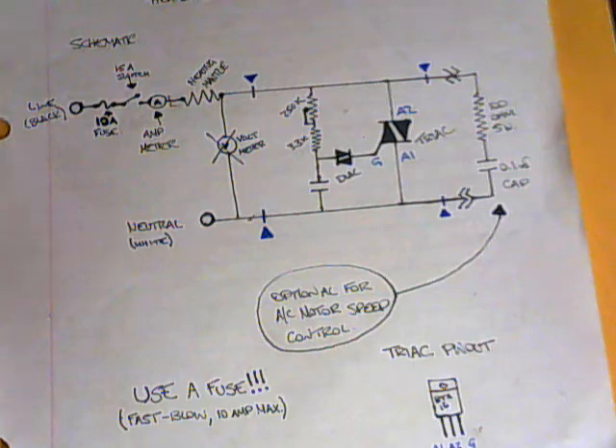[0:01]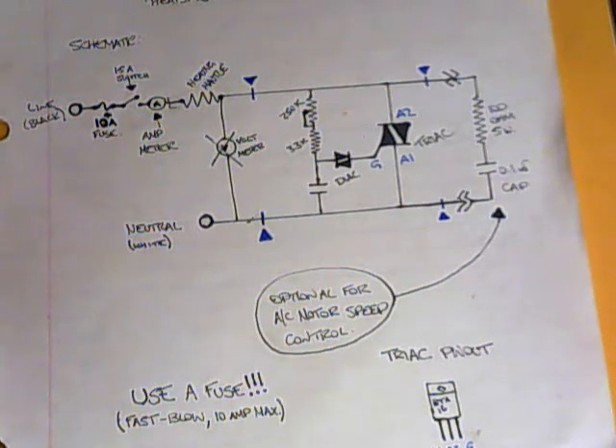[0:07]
Hello YouTube, this is just going to be an in-depth DIY on how to build your own heating mantle control. It's going to be a step-by-step. Hopefully you can follow along and build yours with me as we go.
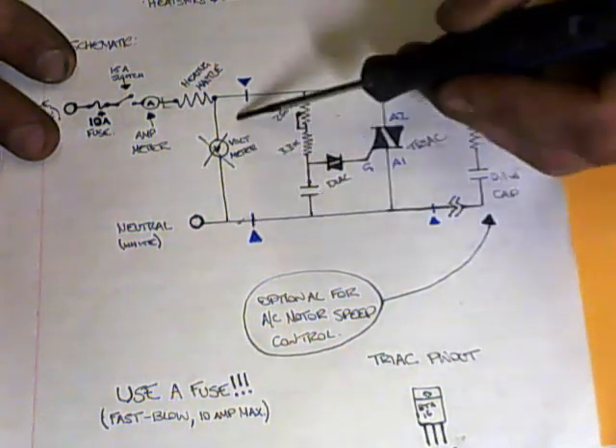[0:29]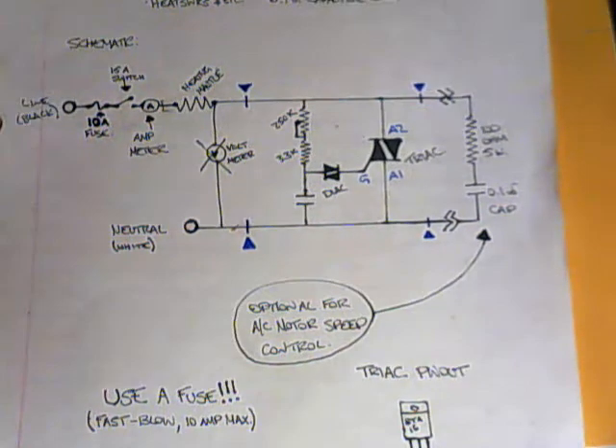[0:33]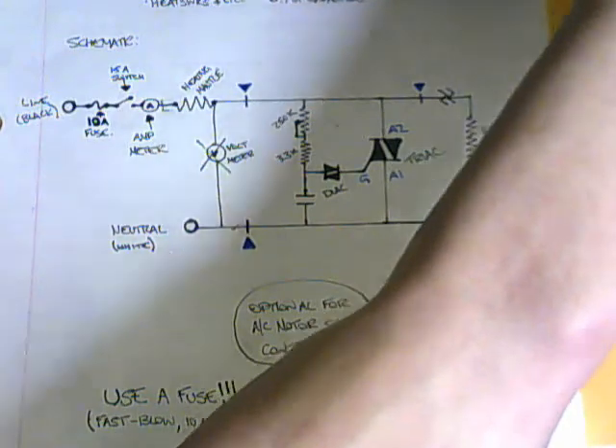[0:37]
First I'm going to go over the schematic here a little bit because I'm not building the whole thing. I'm just building the important part of the circuit, the hardest part for you to do, and I'm going to show you how to do it step-by-step. So we will only be building in between the blue triangles here. It's not going to take too long. Like I said, you only need 5 parts.
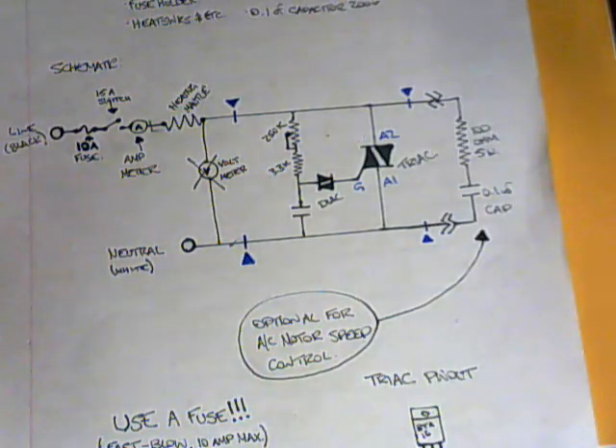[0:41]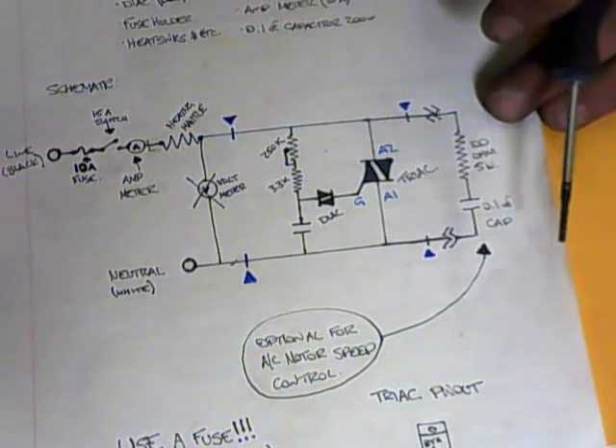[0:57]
So what I would recommend you do right now is pause this video and draw this schematic, something similar to it at least, so that you can follow along and highlight as you go, so that you can remember what you've done, like I've said before.
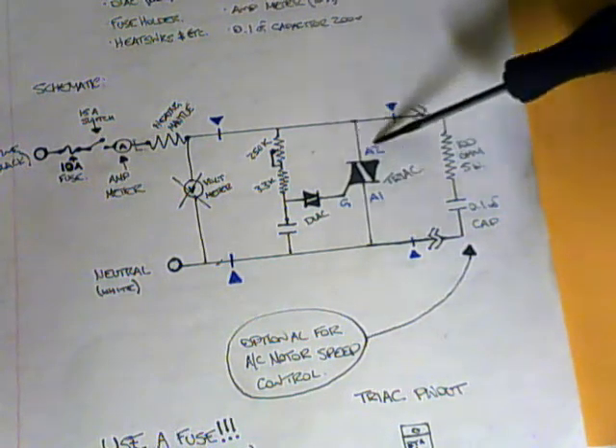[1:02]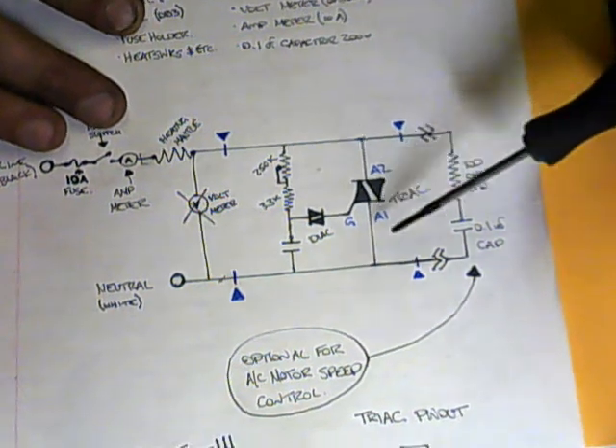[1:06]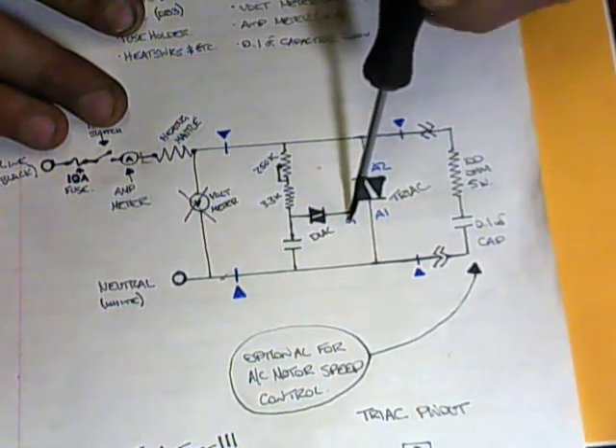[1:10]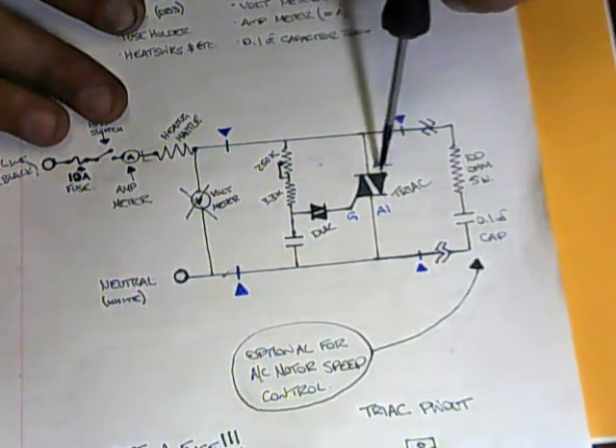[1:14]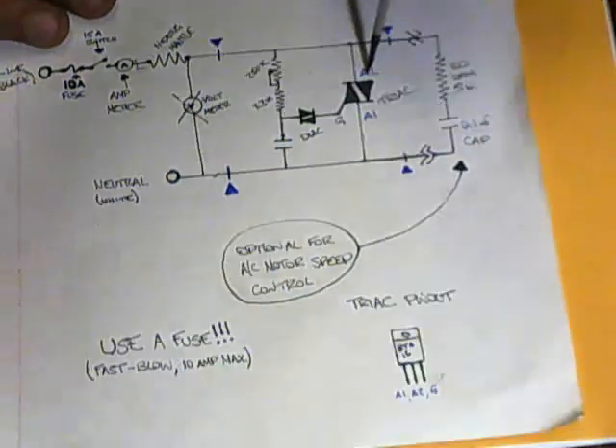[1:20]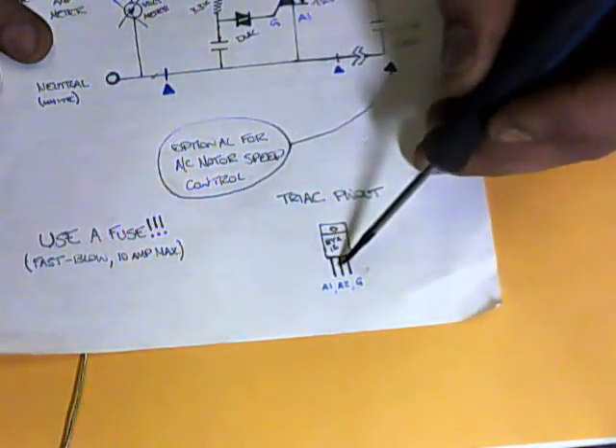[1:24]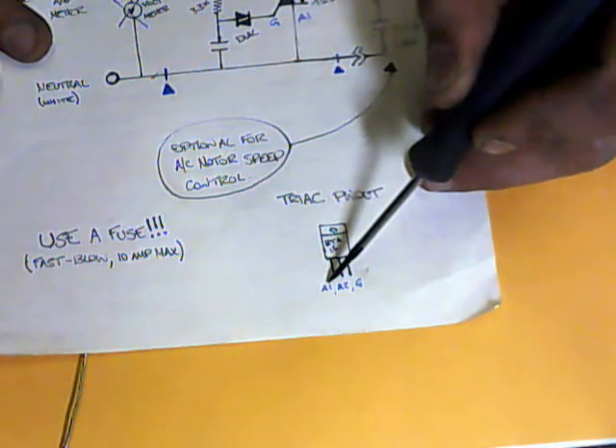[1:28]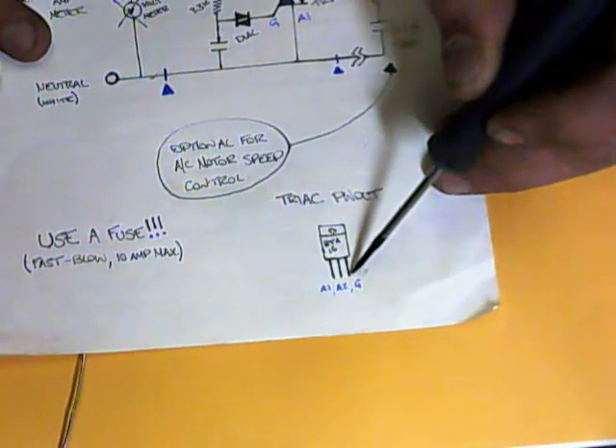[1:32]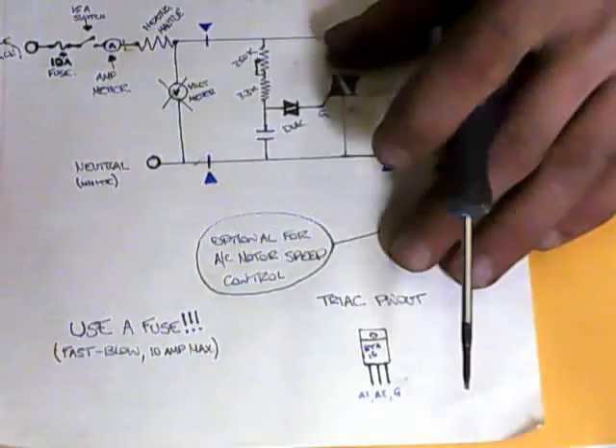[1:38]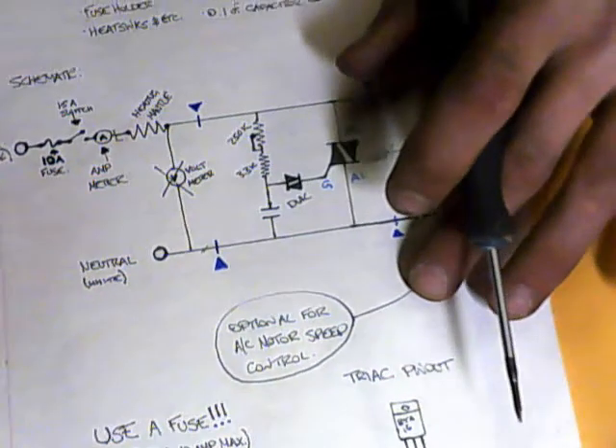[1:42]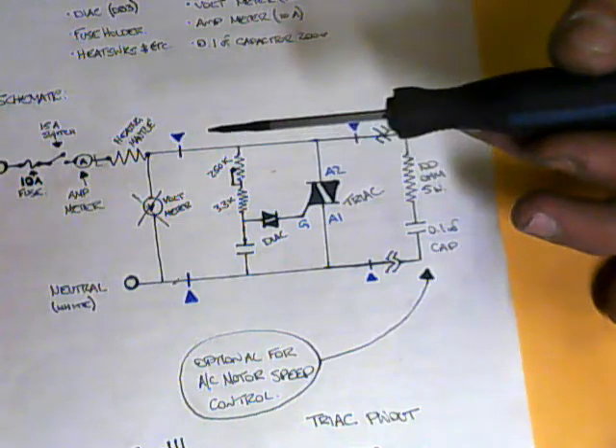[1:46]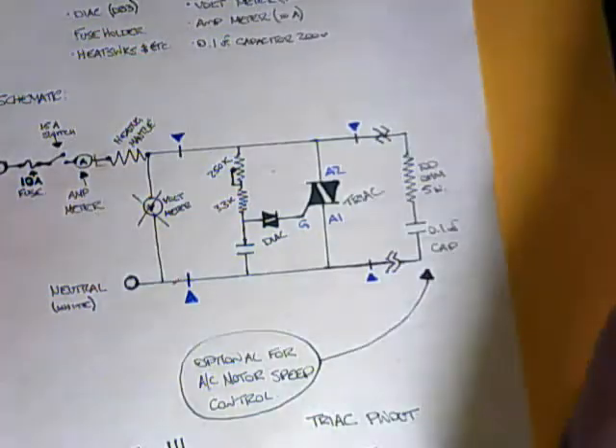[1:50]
Also, one thing to keep note of is the triac here. It is important which way you connect it. So just remember that this one is the gate. This one is A1. And this one is A2. Write that down. The pinout is right here. Pin 1, 2, and 3. Pin 1 is A1. Pin 2 is A2, and pin 3 is G. This is important. You have to get that right. You're going to be following along anyway, but just keep that in mind. Everything else, because it's alternating current, it doesn't matter which way you hook it up. The polarity doesn't matter. So that being said, let's get into some of the parts you're going to be needing.
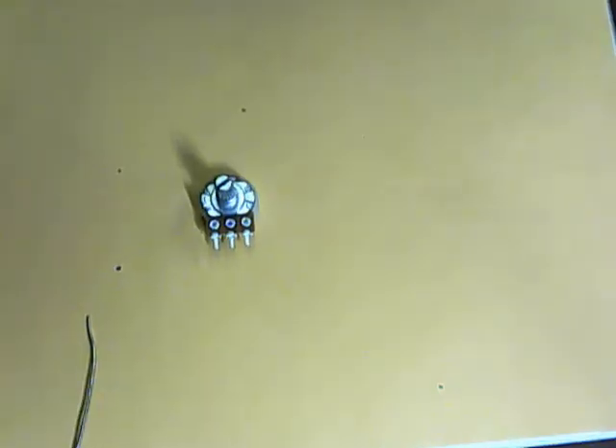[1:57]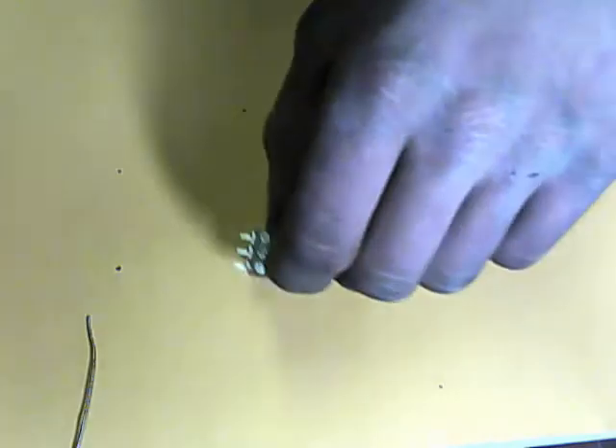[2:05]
First off, there's going to be a potentiometer. It's rated for 250 kilo-ohms. You can find those on eBay for about 75 cents each, or 2 for $1.50. I got 2 for $1.50. You're going to need a triac. Triacs are going for about $1 each. I got 5 of them for like $4.50.
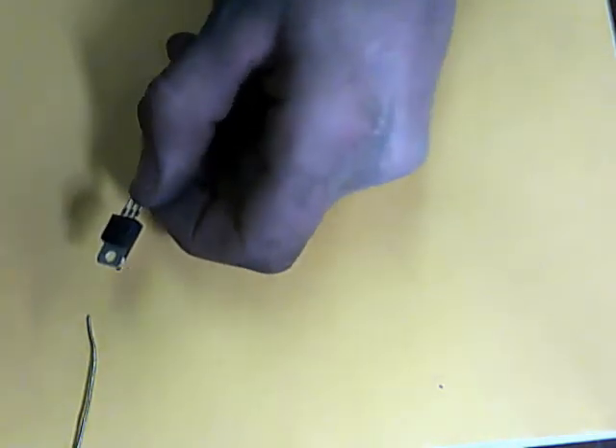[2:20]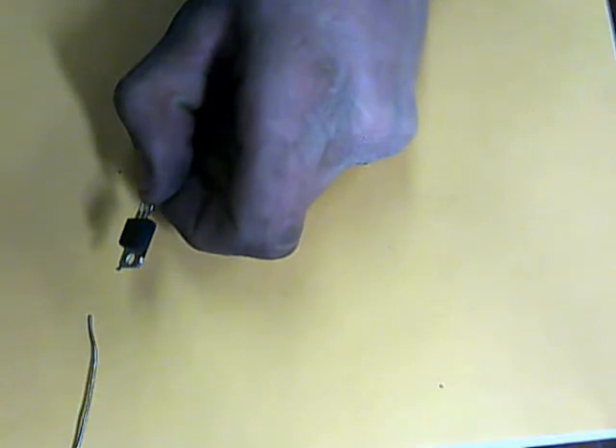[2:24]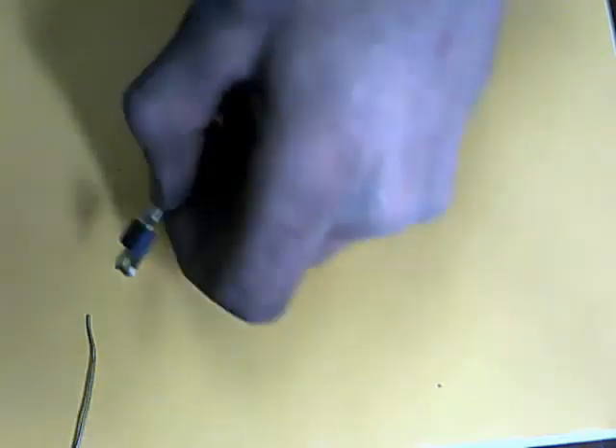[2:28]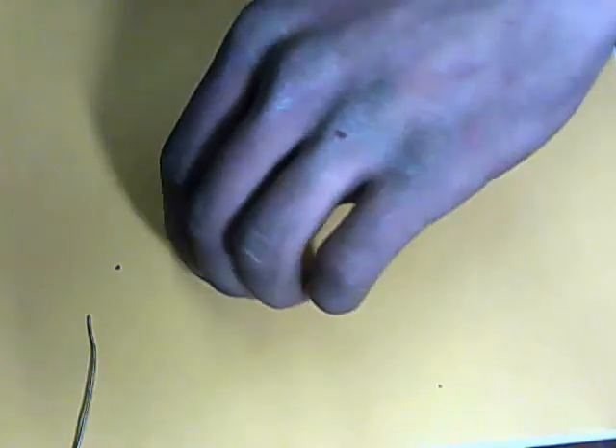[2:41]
This one's number is BTA16. It's a 16 amp rated triac. It's oversized because we're planning to be running a maximum of 10 amps, and that way we won't burn out the triac. Hopefully.
You're going to need a 0.1 microfarad film capacitor rated for 250 volts. It can be ceramic, it can be film, it can be any type of capacitor, as long as it is 0.1 microfarads and it is not electrolytic. Not one of the little black round ones like these here. You don't want those.
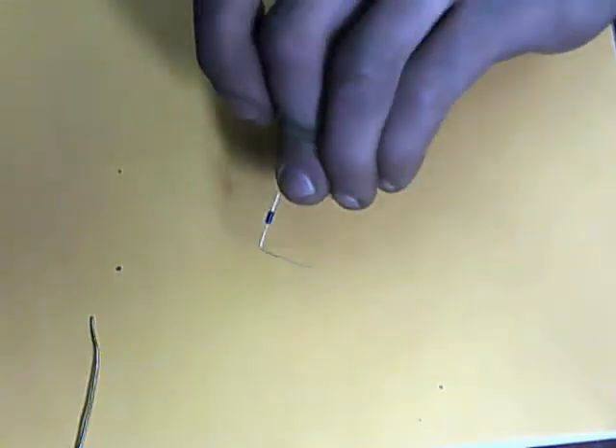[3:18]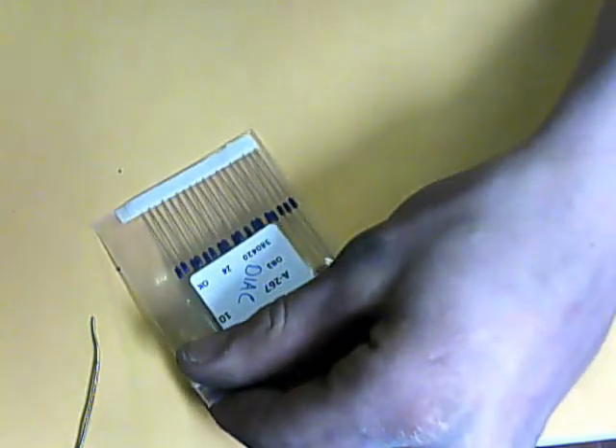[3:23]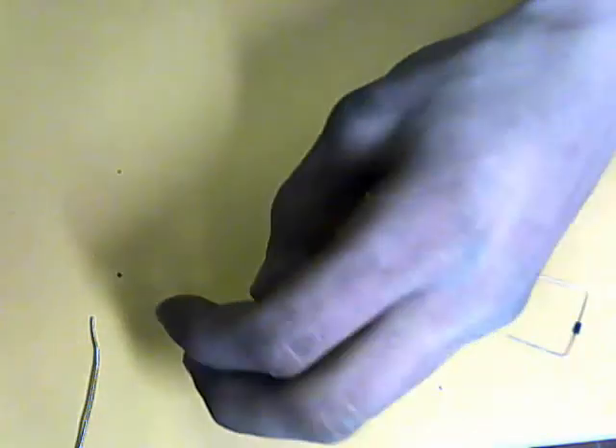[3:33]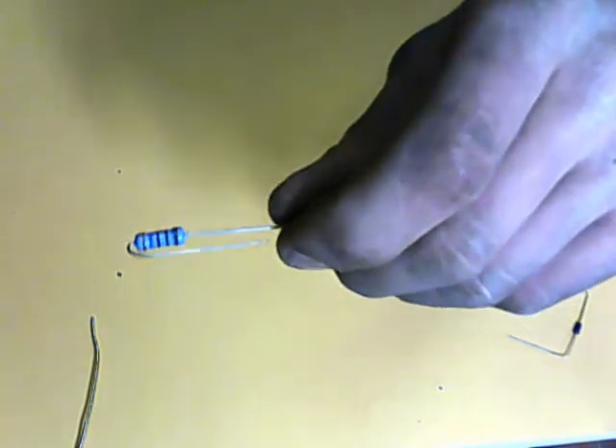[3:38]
The next part you're going to need is a Diac, which is this little guy here. Its part number is DB3. And it is a Diac, so you could look that up on eBay. I got 10 of them here for $1.50. And you're going to need a 3.3 kilo-ohm 1-watt resistor. You need to get about 10 of these for $2.50.
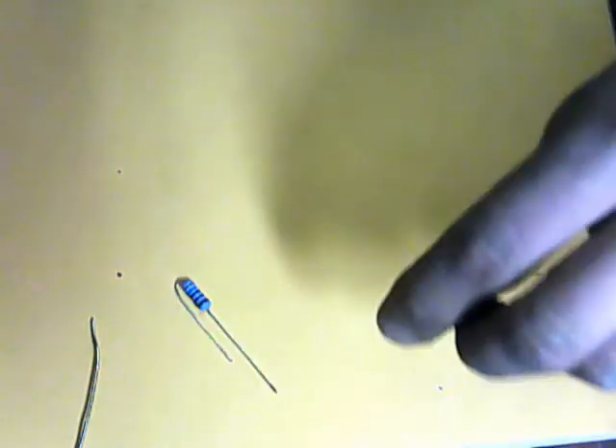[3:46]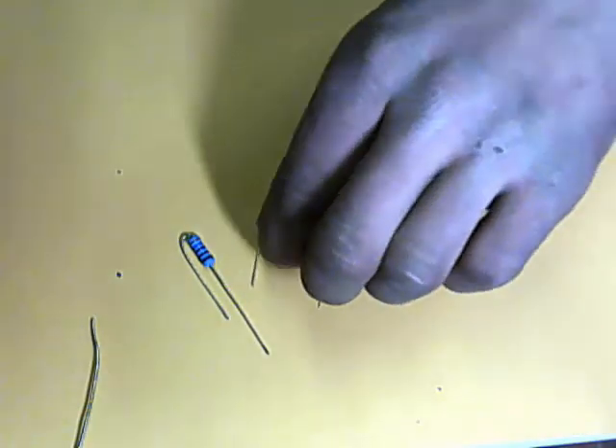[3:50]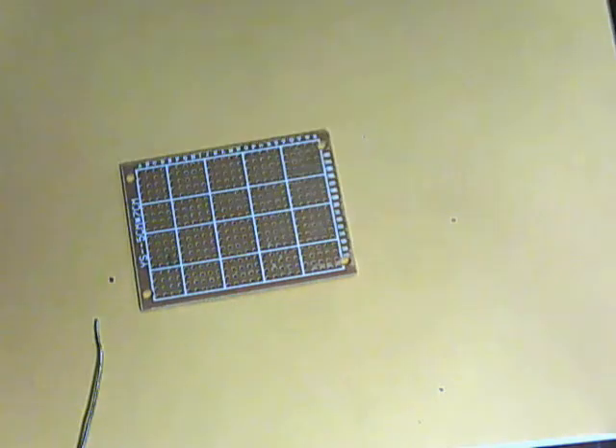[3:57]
Just take note of how I have my pieces bent up here. It doesn't really matter. It's just taking some space. It's going to help us out along our way. Another optional piece, you can solder it all together point to point if you're following along close enough, but a breadboard really helps, and I'm going to be putting it together on a breadboard right now to show you how it's done. These are going for about $1 each on eBay.
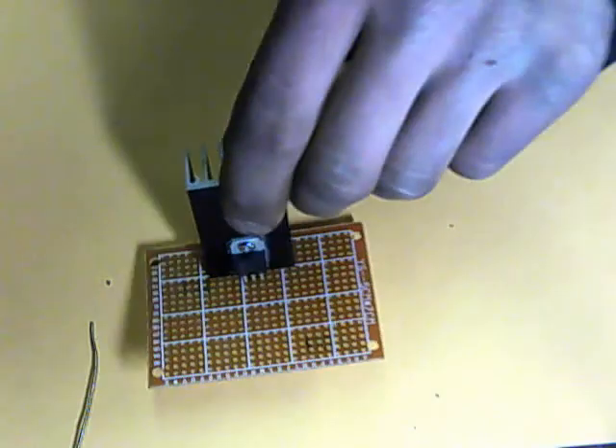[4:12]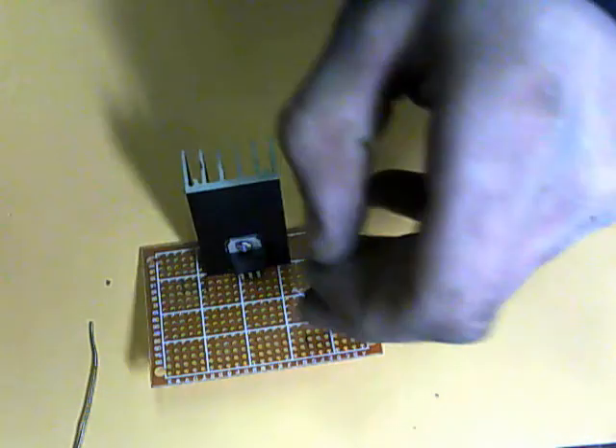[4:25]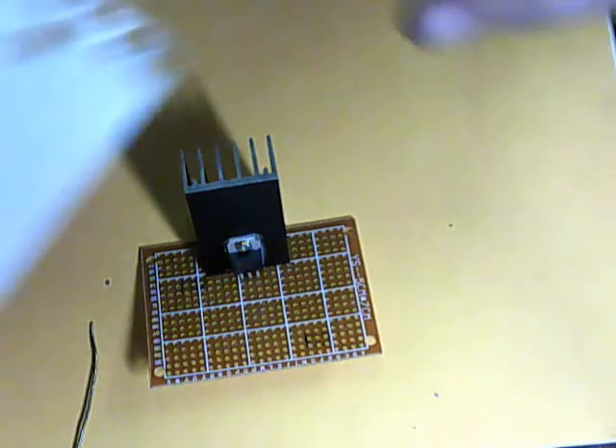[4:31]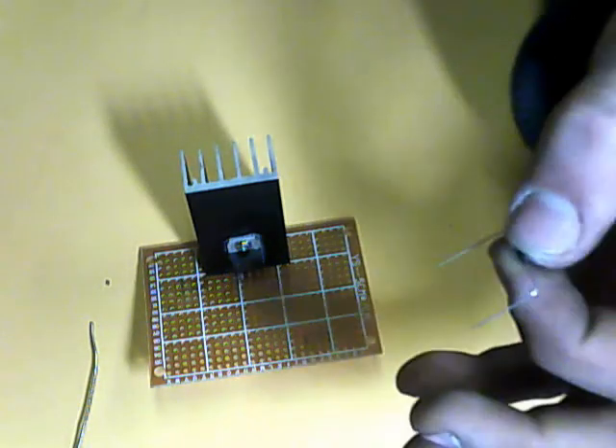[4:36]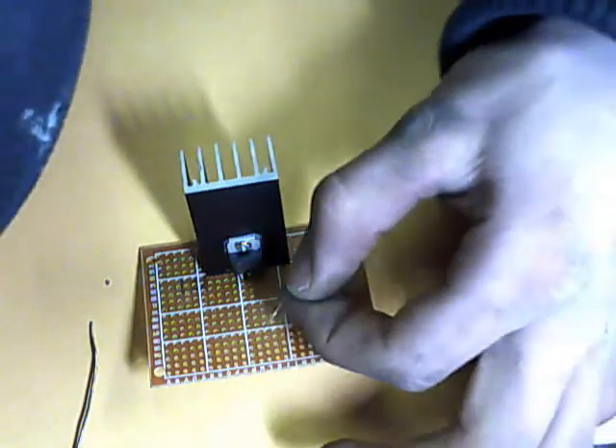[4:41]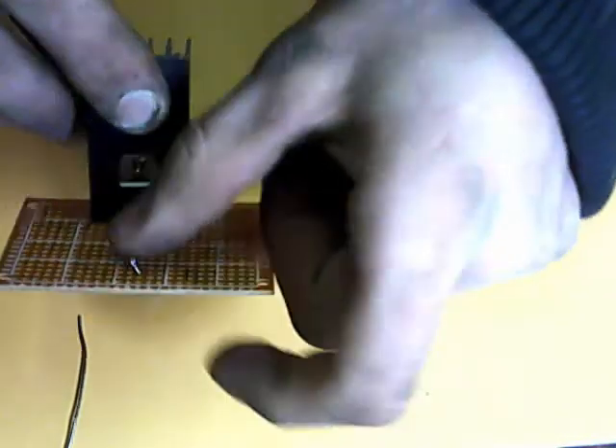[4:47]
So to start here, what I've done is I have mounted a triac to a heatsink, and I've gone ahead and soldered it to the breadboard somewhere in the middle near the edge. And the first thing we're going to do is take the Diac, and it goes from the gate, if you note from the schematic that you drew up. Pull mine out here. So from the gate, which is pin 3, you can count over from the left, 1, 2, 3, and we're going to put the Diac in front of it, and drop it down in there like that.
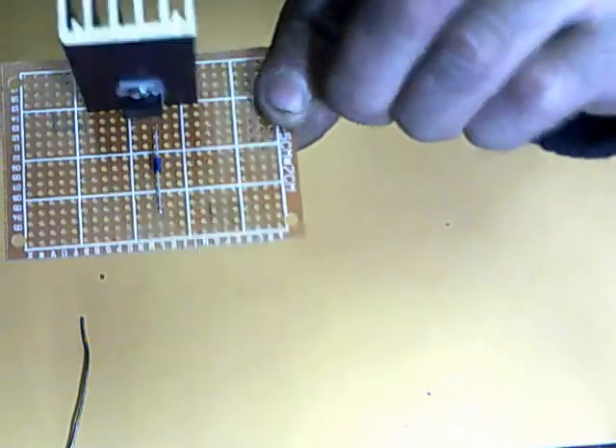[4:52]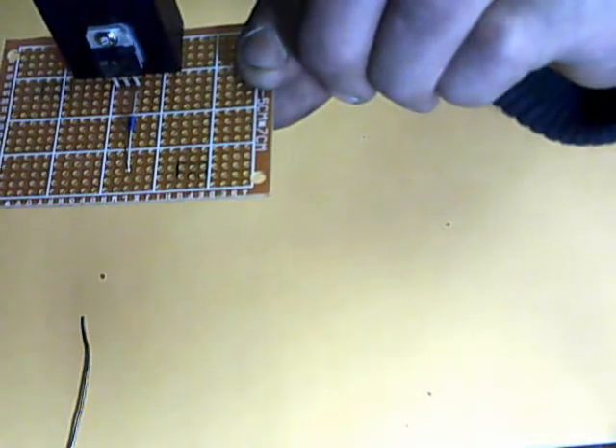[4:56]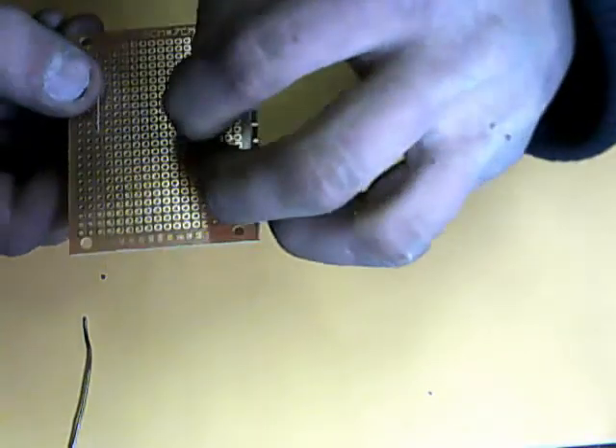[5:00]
I don't know if you can see that very well, but it's right in front of pin 3, and it extends out almost to the end. Not quite. So flip that over here, solder that in quick.
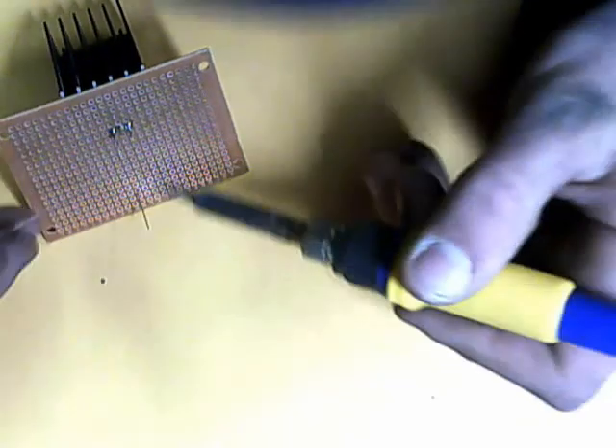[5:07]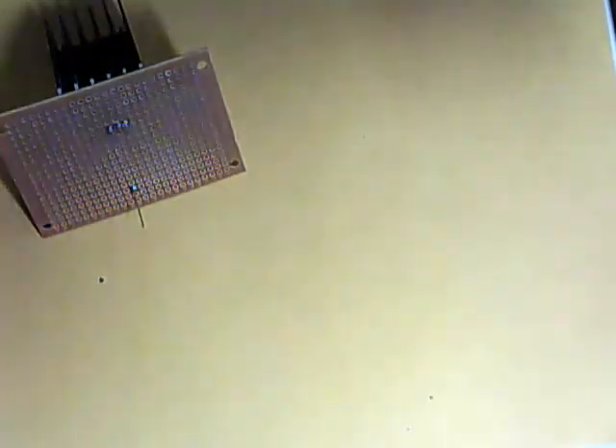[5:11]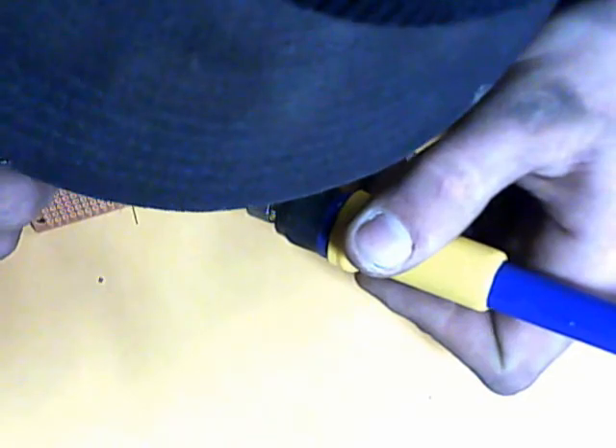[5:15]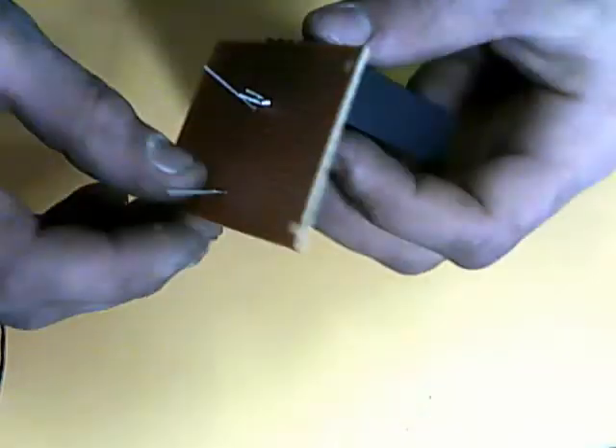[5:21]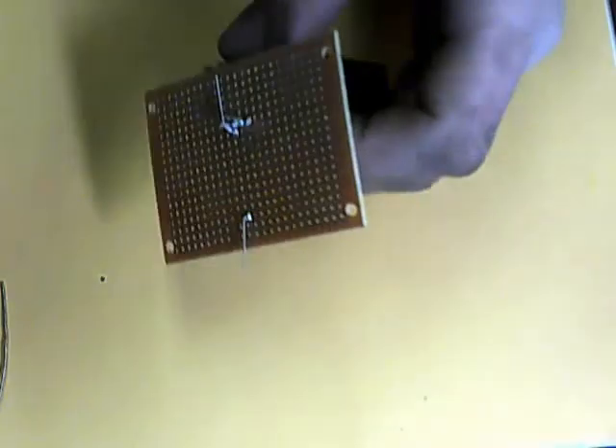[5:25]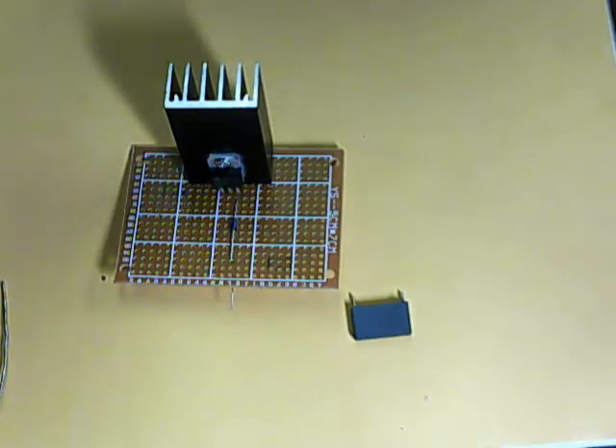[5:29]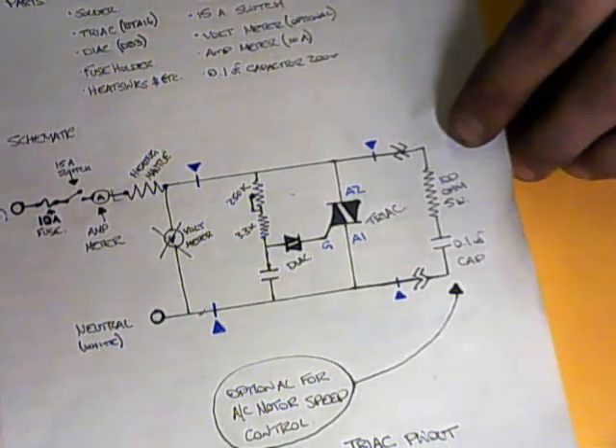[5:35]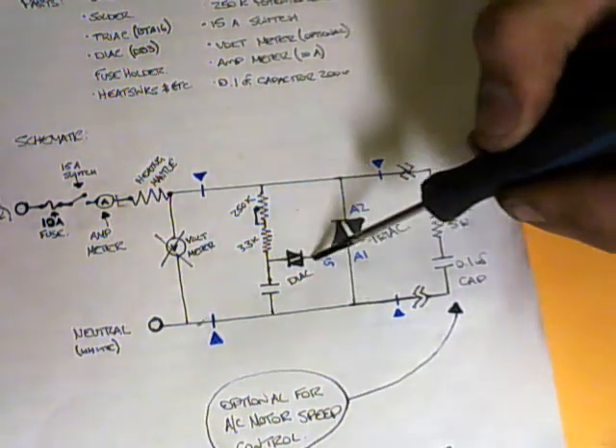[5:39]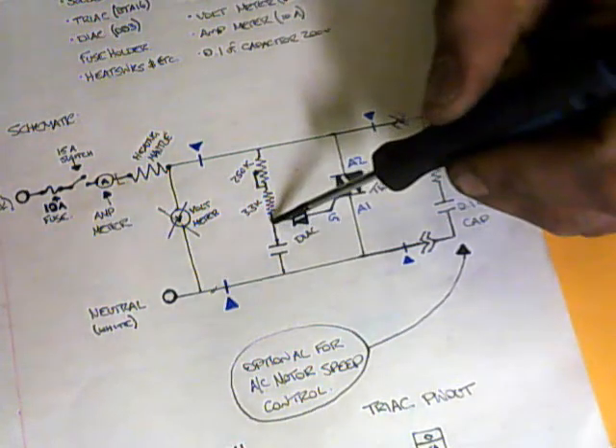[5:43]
So now that we got the Triac put in, I'm just going to fold these wires out of the way for now. We'll cut them all off at the end. So the next to the Triac, if you notice here, put this down out of the way. So off of the Triac that we just soldered in onto the gate of the Triac, it goes through the
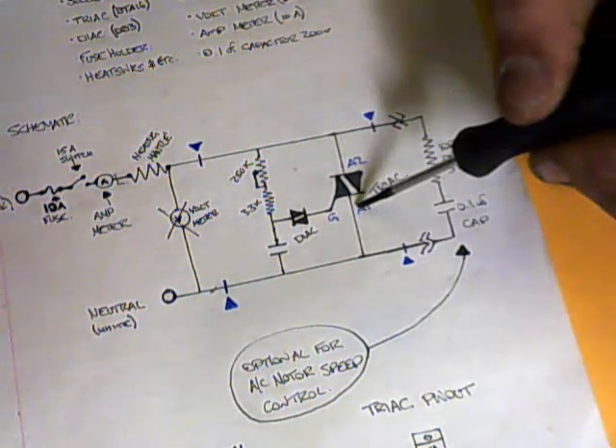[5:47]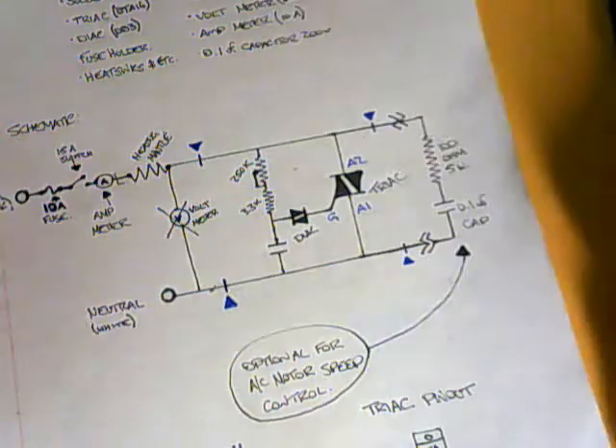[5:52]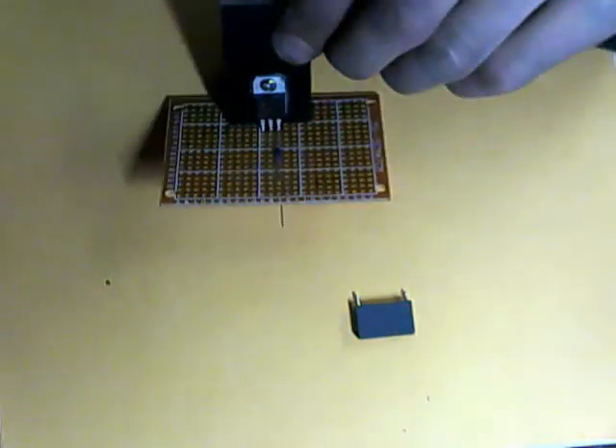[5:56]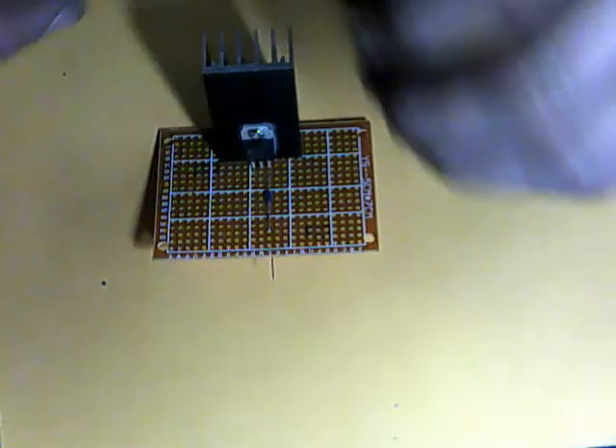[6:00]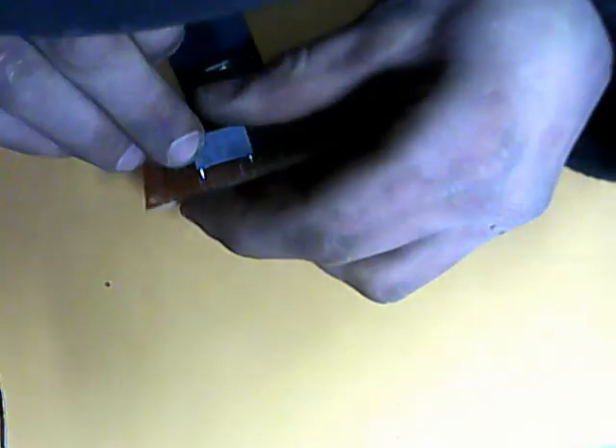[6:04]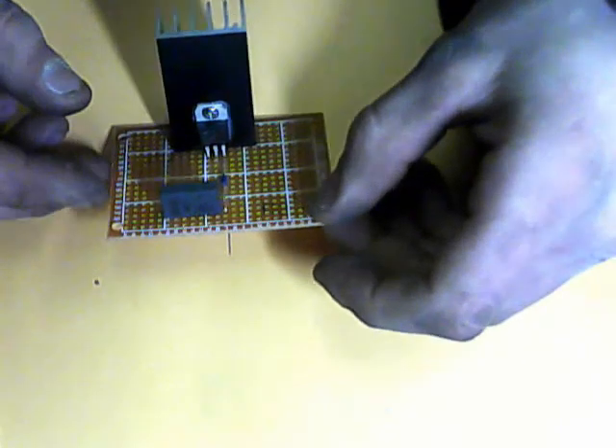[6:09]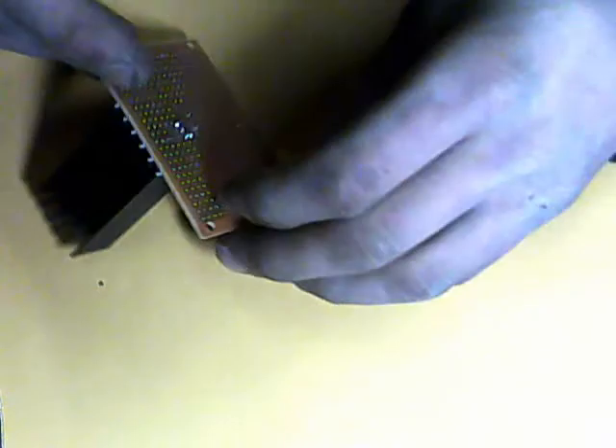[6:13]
capacitor to the neutral side. And we're also going to note that A1 goes to neutral. So what we're going to do here is A1 is pin 1 on the Triac, which is on the left-hand side of the circuit. So what we're going to do is we're going to take our capacitor, and from the Triac, we're going to go to the left, just to make things simple, and we're going to pop it in right at the end of the Triac there, like that. I'm going to go ahead and solder that in too.
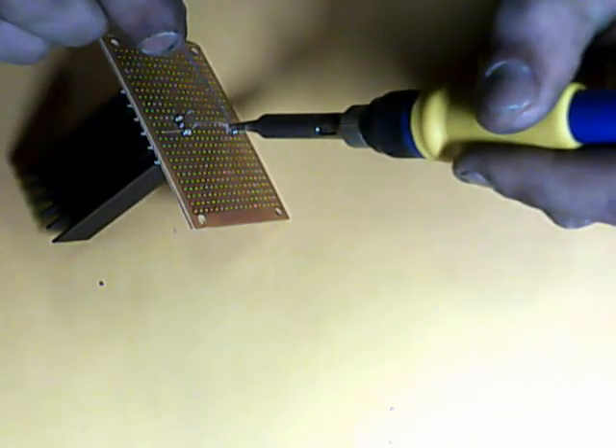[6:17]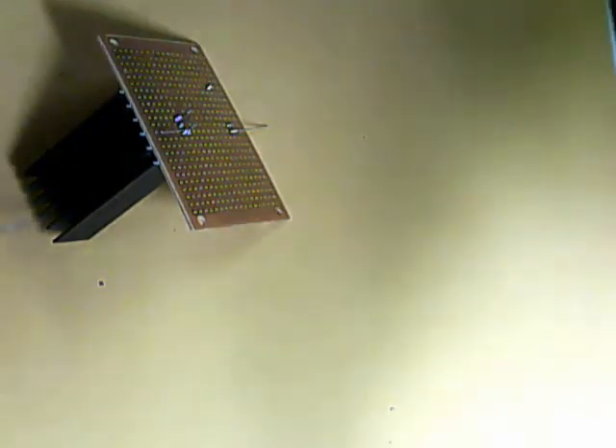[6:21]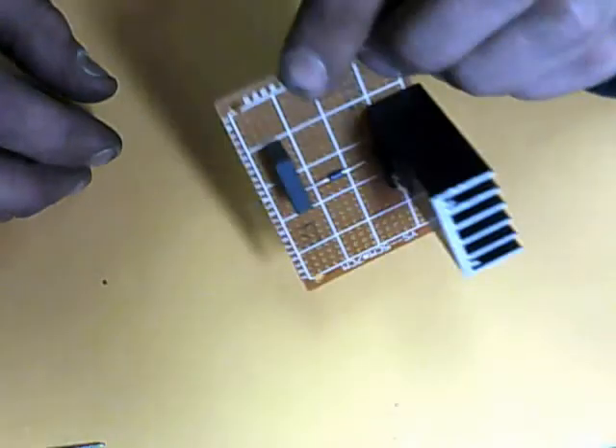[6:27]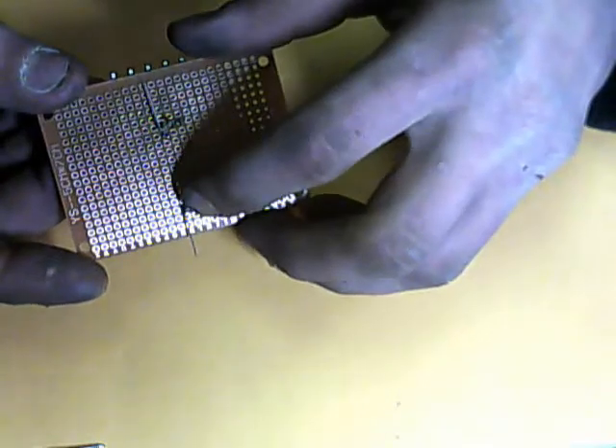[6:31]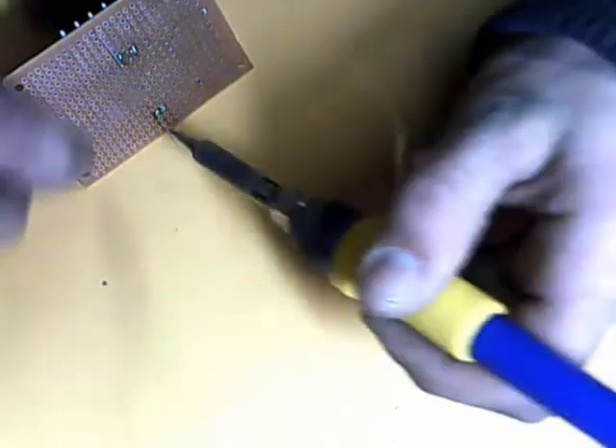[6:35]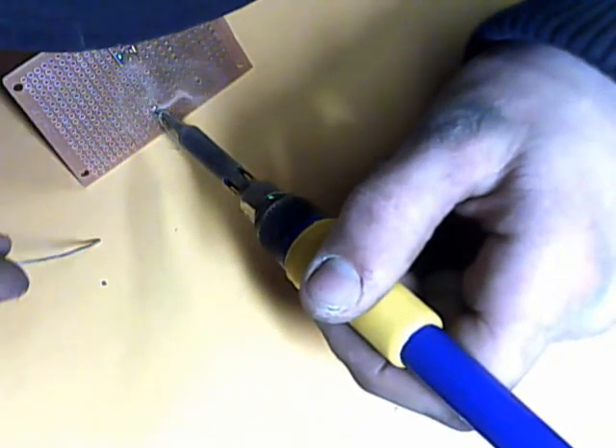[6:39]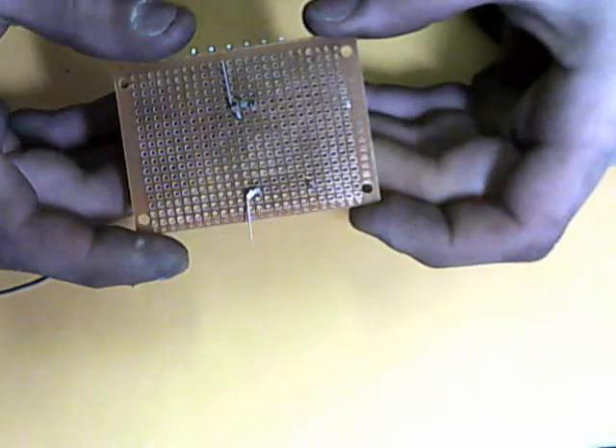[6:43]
So now that you have the capacitor soldered in beside the Triac there, what you're going to want to do is connect the one side of the capacitor to the end of the Triac there. Do that with a little bit of solder. What we did there, I don't know if the camera will see it, but we just bridged the gap between the two there. So now we're going to flip the circuit back over.
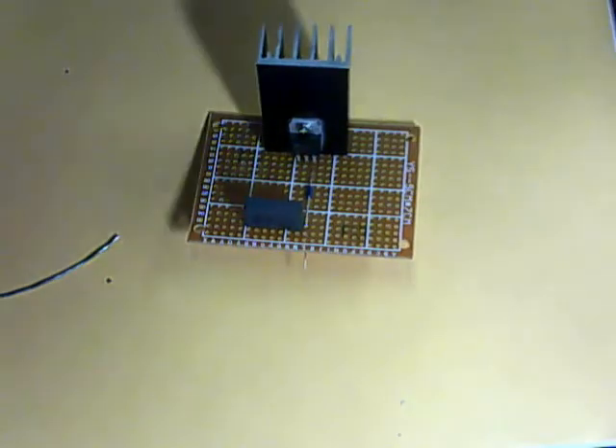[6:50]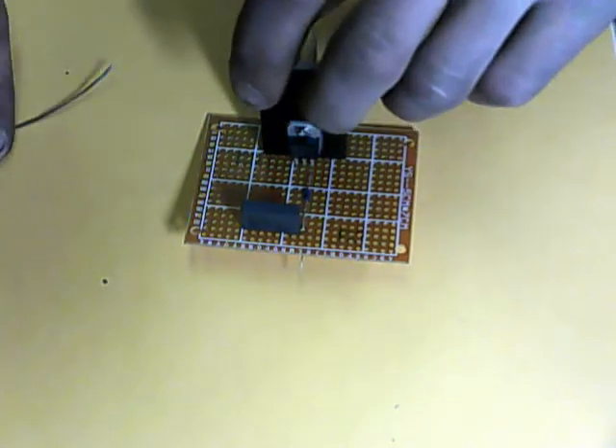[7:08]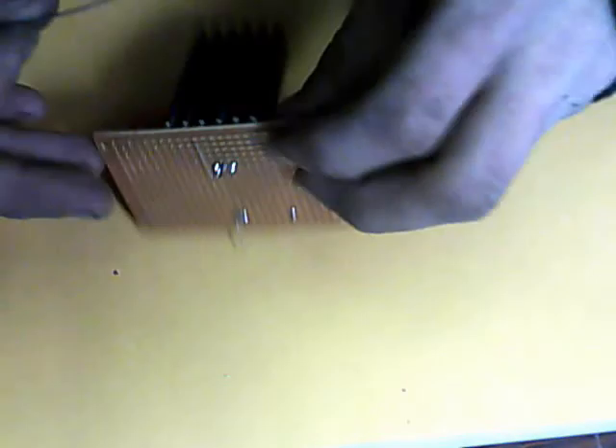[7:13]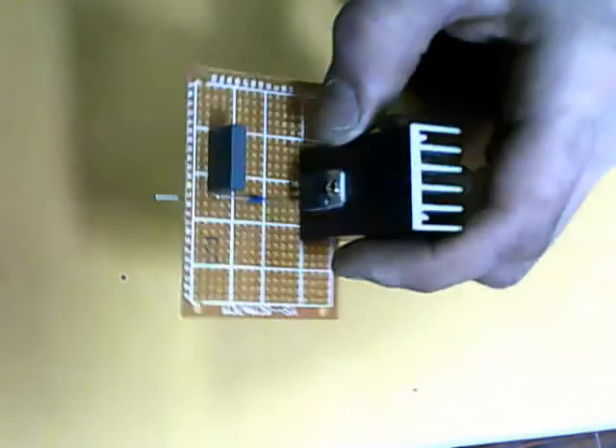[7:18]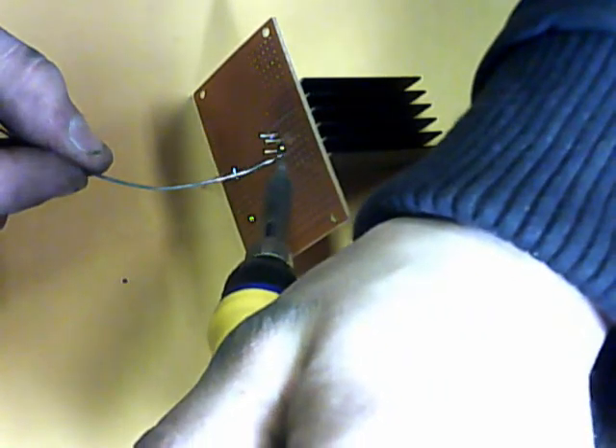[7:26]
So now that we've put the Triac in and the capacitor that is going to the neutral side of the circuit, what we're going to do is take pin A1, which is the farthest pin to the left, and we're going to basically run that over to a neutral rail, which I'm going to do now. So make sure you remember when you flip it over, everything's reversed, right? So pin 1 is going to be the farthest one on this side. We're just going to connect to it with some solder.
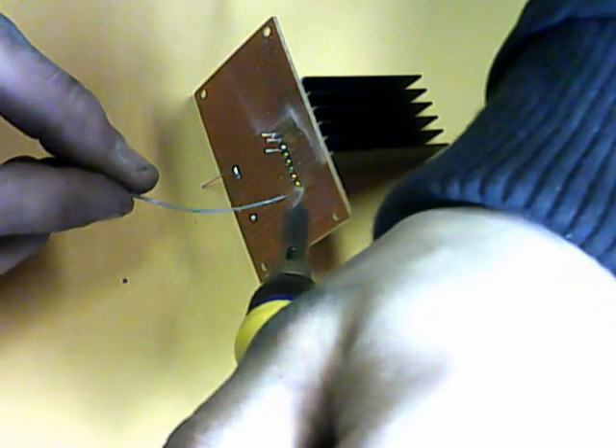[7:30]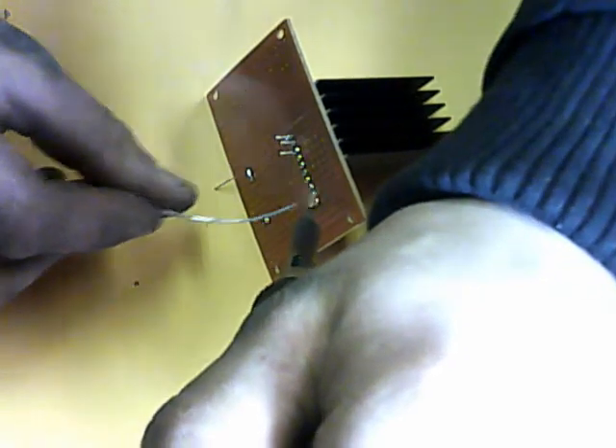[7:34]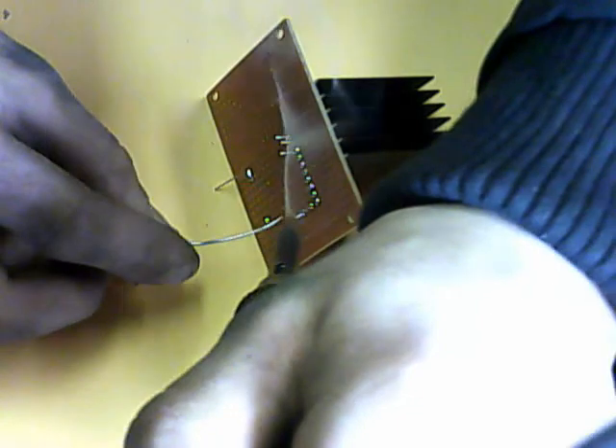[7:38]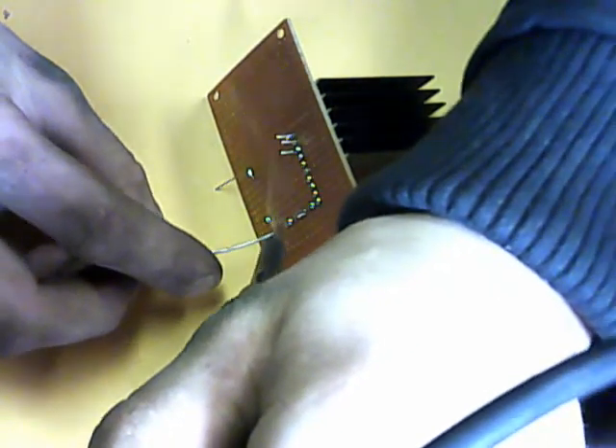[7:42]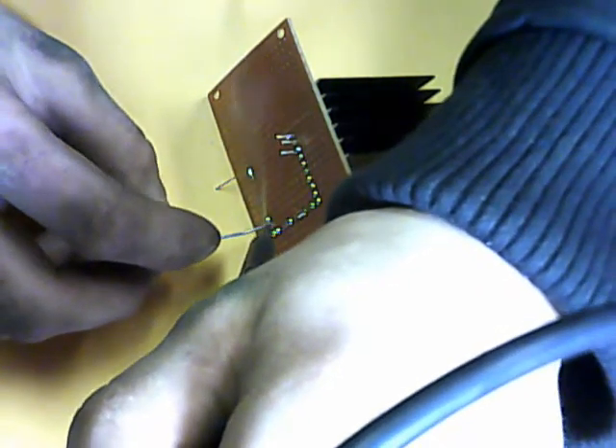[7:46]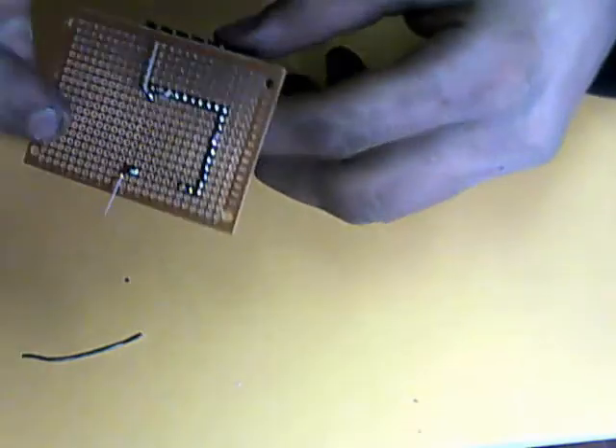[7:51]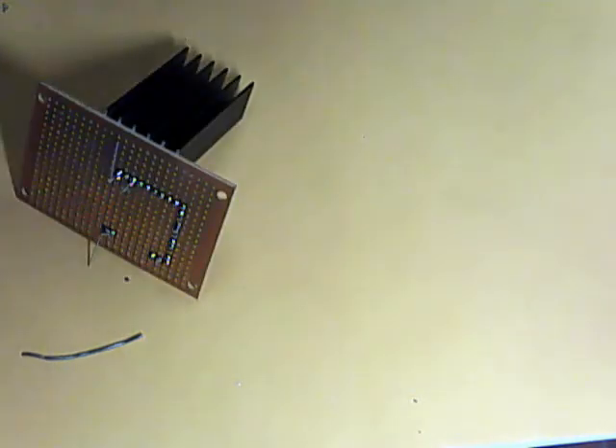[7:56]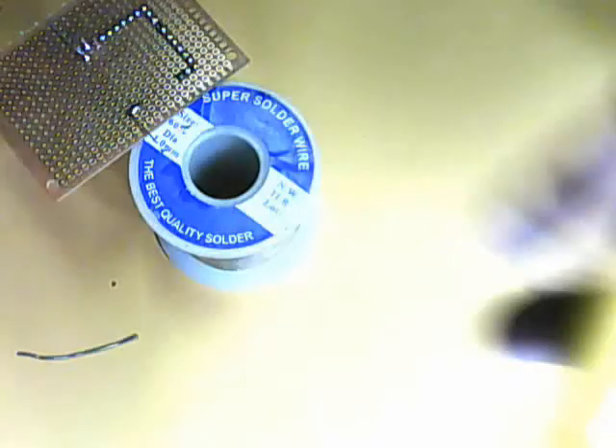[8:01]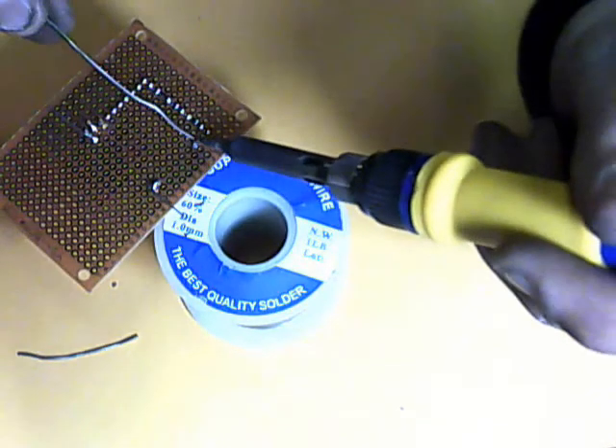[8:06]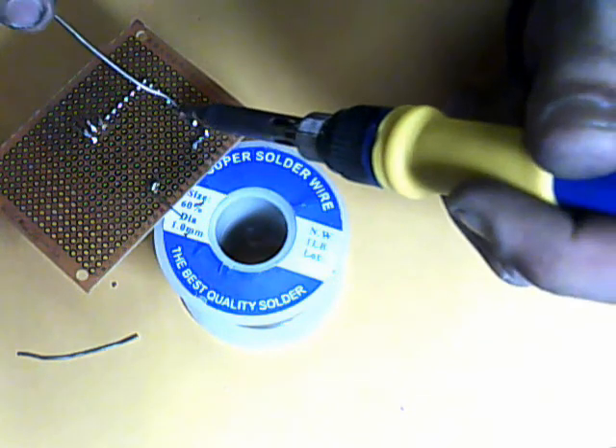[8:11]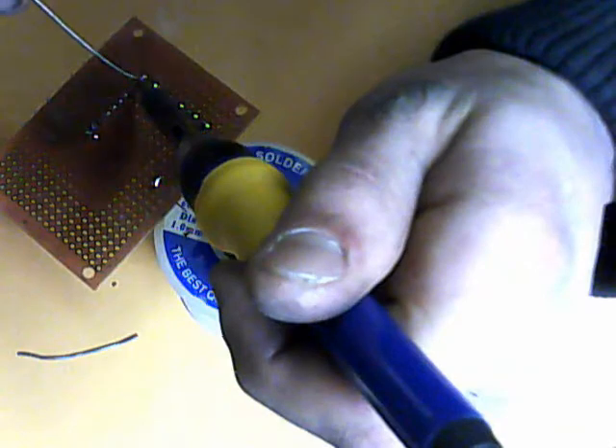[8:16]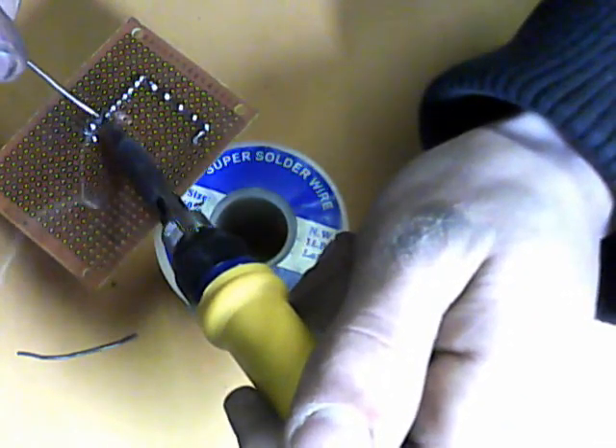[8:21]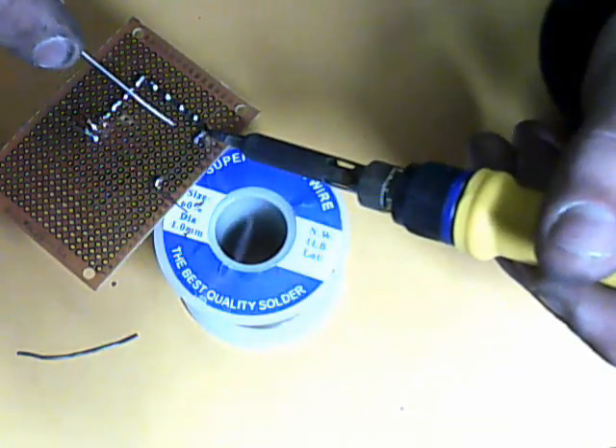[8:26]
Connect around something like that. I'm going to bridge the gaps in between all of those joints there in a second. It's going to take a second. That's the nice thing about these breadboards is you can bridge the gaps like this and you don't need any wire at all. You can just connect all of your joints with just solder, and when you're done, you have a nice finished circuit board.
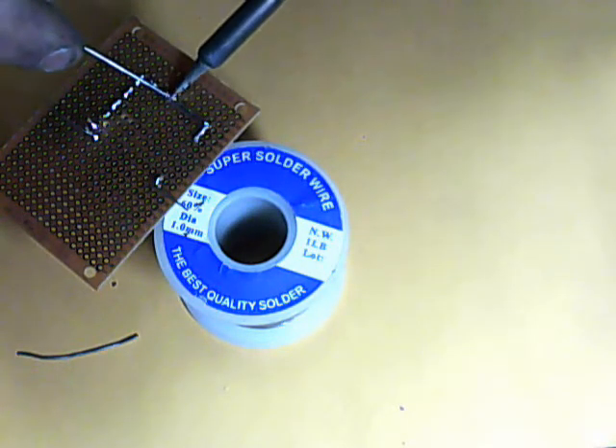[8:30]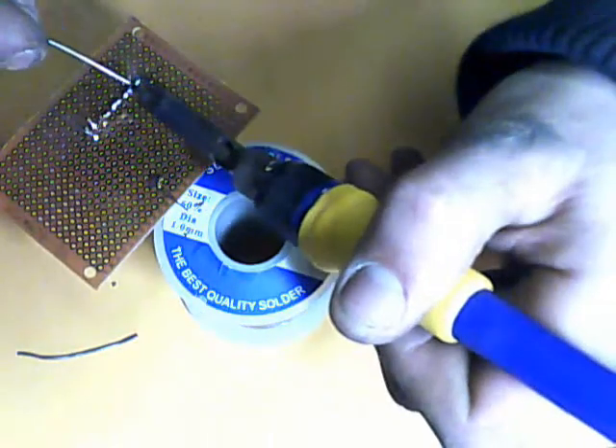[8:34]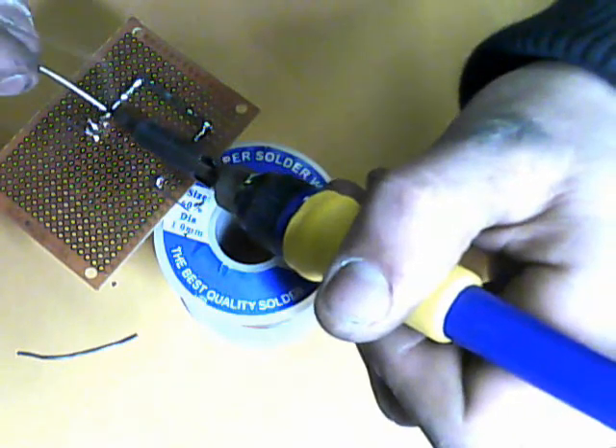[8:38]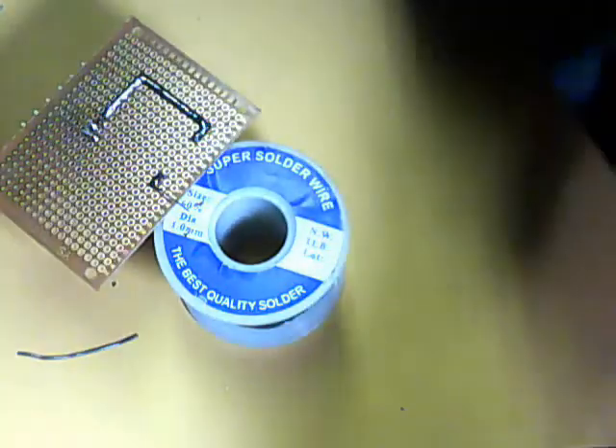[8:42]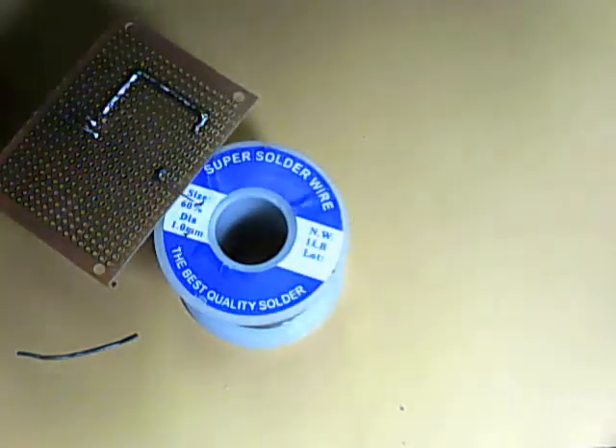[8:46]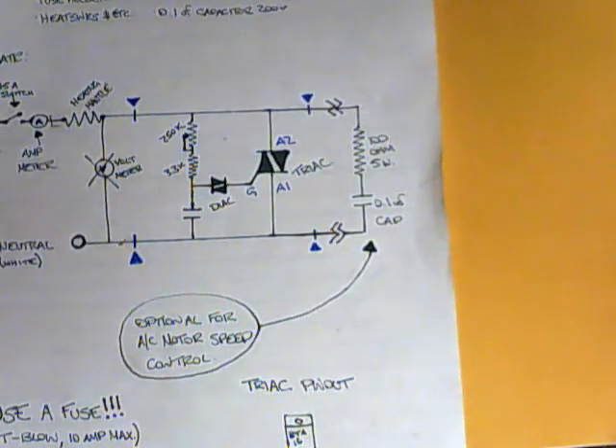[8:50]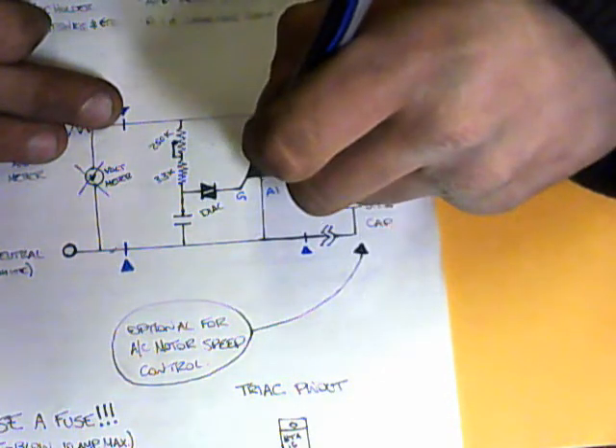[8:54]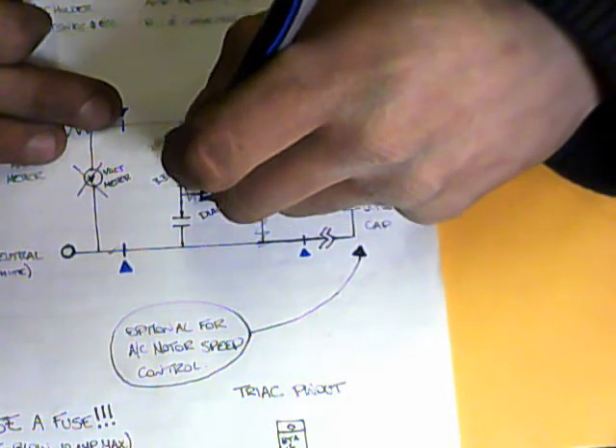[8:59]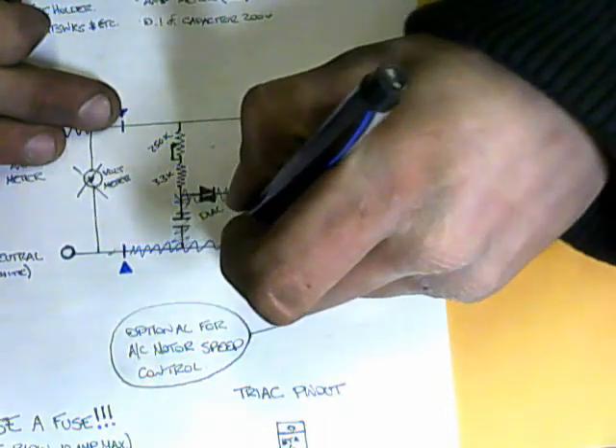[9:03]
Alright, so that is our neutral rail. So we go over to our schematic here again. The neutral rail, the Triac, and A1 is finished. So we'll cross this out, cross that out, the capacitor, and the whole neutral rail is done.
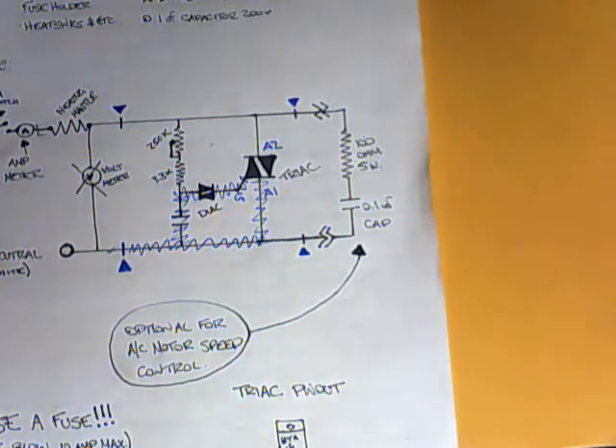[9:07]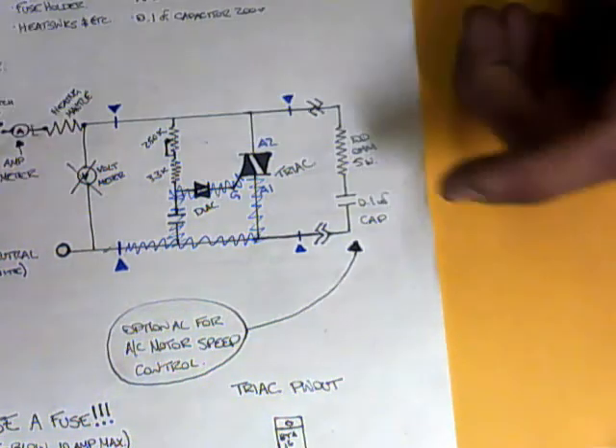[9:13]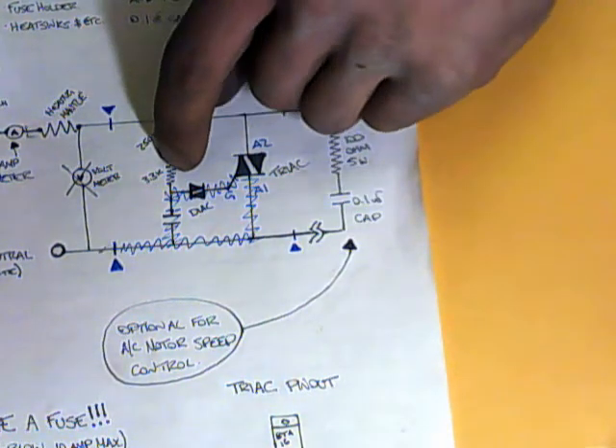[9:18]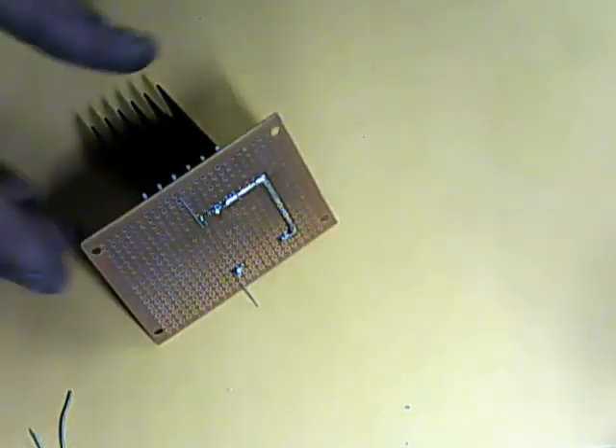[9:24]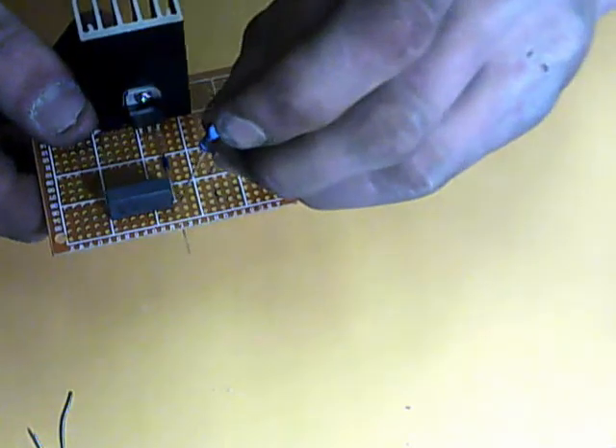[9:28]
So now what we're going to do is start on the line voltage side of the circuit. So obviously, as you can see here, off the other side of the Triac, it goes through the 3.3 kilo ohm resistor. So what we're going to do, take our 3.3 kilo ohm resistor, and we're going to put it in right beside the other side of the Triac.
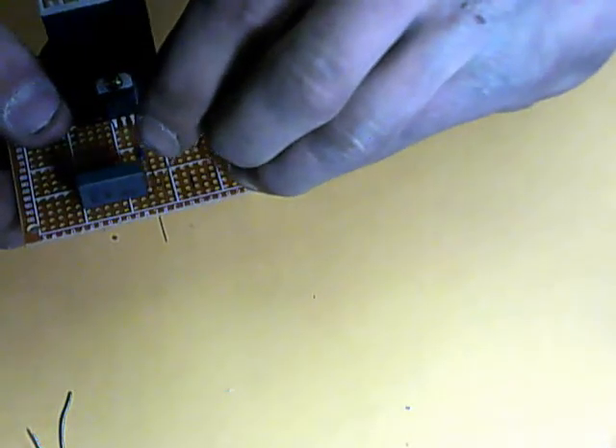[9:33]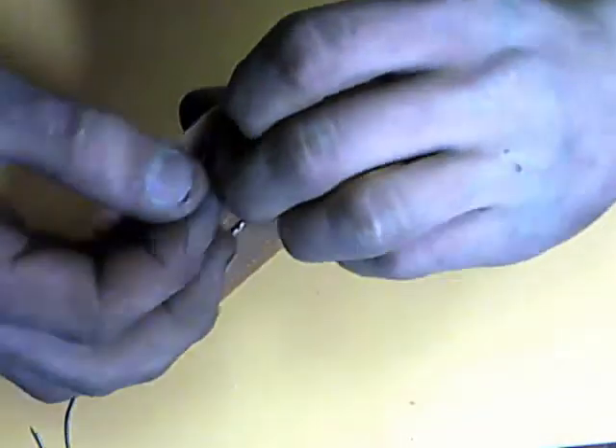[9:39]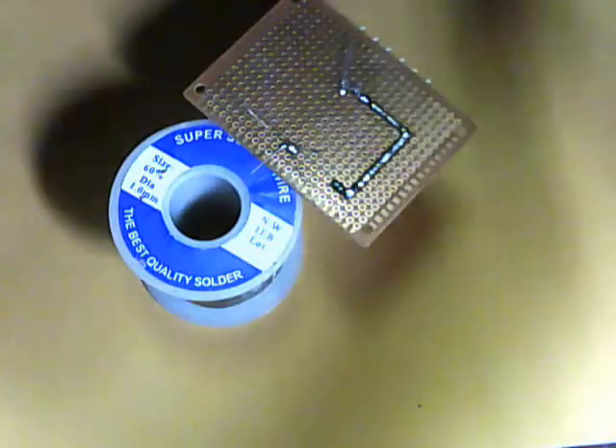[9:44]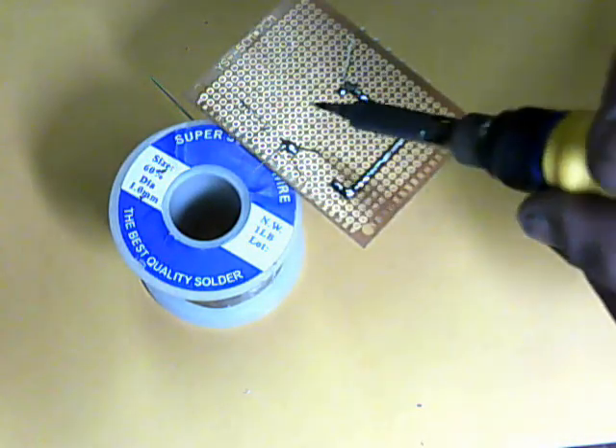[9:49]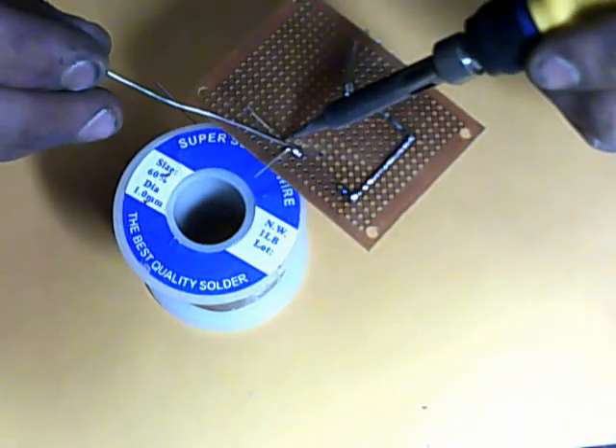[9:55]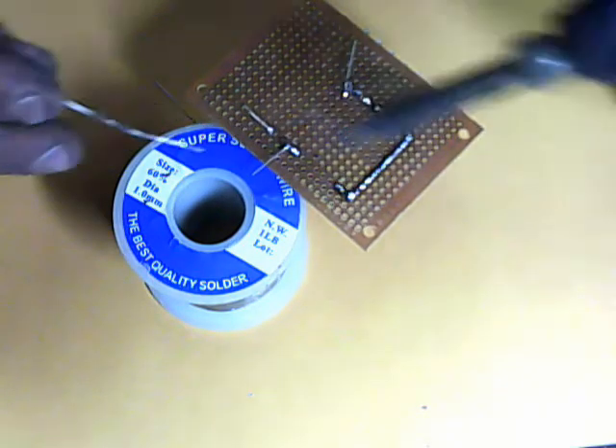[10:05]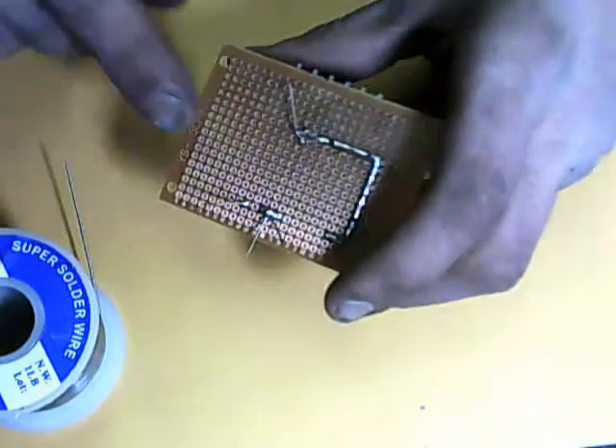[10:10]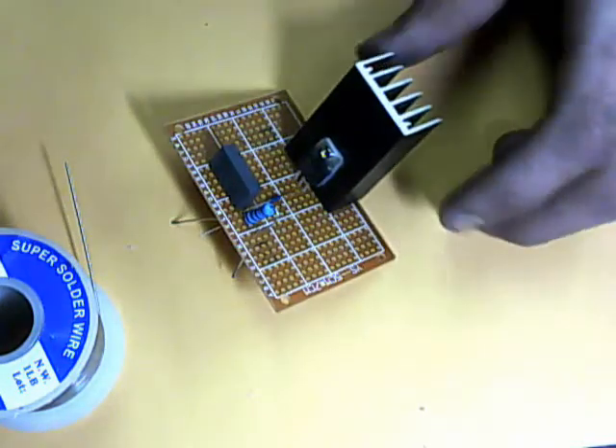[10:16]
A nice little bend in it here in the end to hold it in place. And we'll solder that in. We're also going to bridge the gap between the resistor and the end of the Triac and the end of the other capacitor. Make sure you don't connect the points in between the resistor there. So now we got the resistors done.
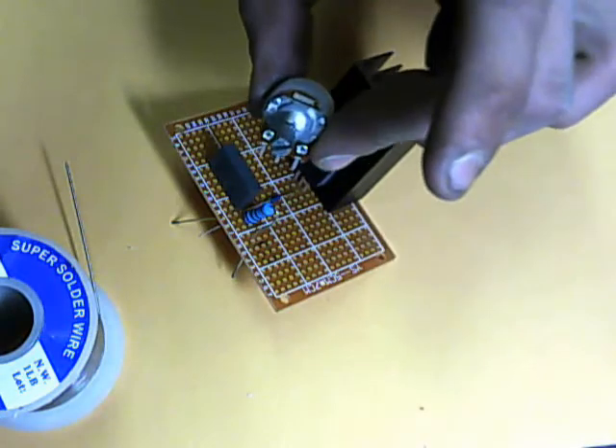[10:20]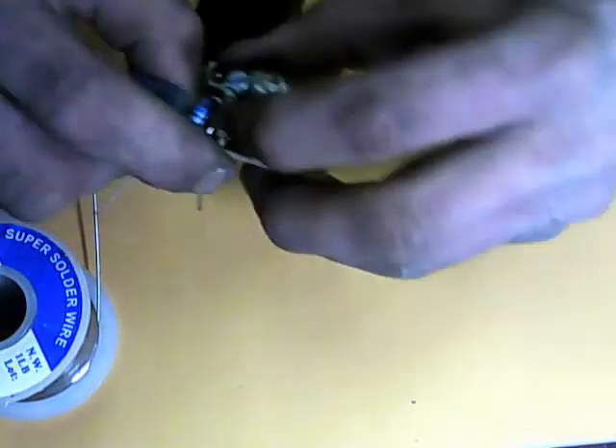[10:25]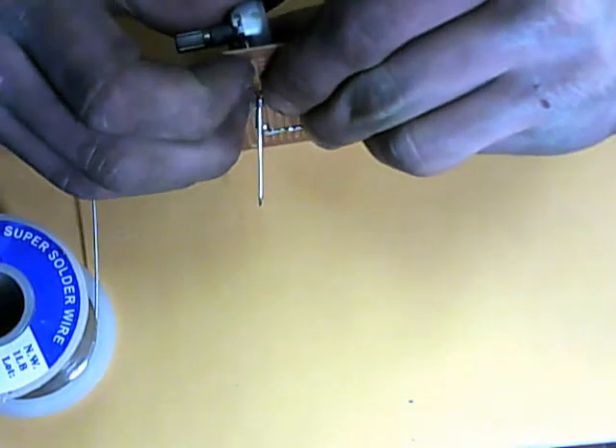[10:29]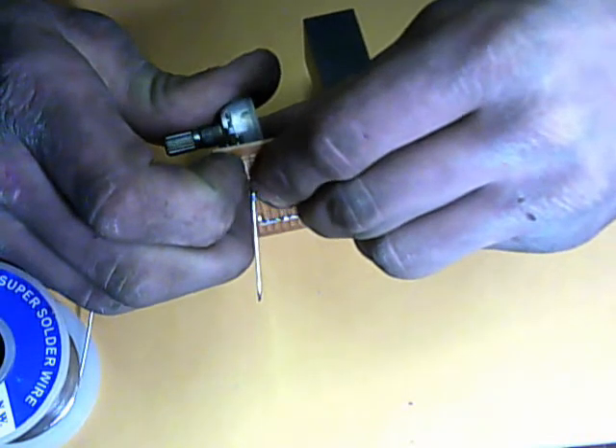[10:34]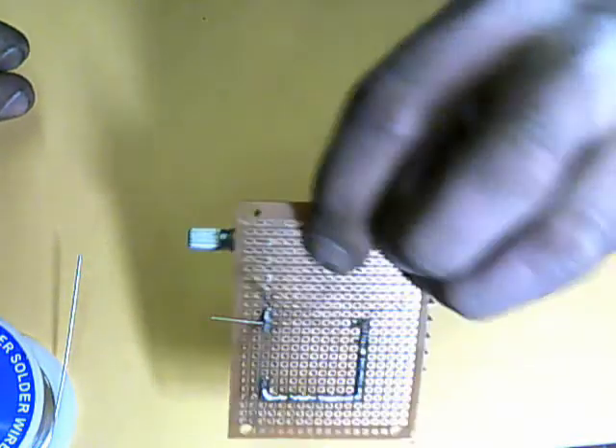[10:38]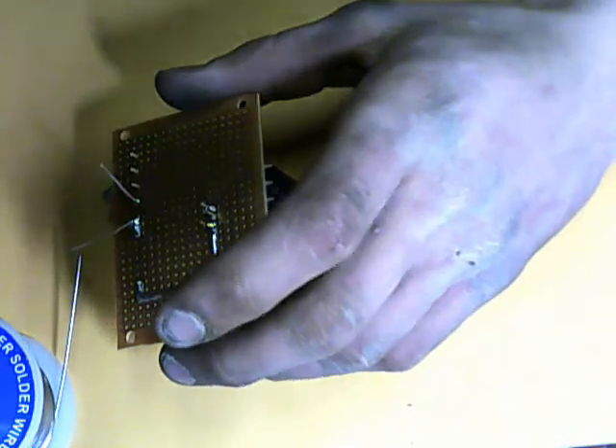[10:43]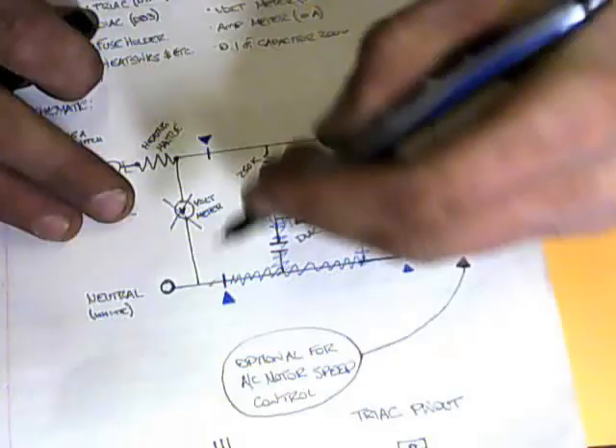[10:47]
The next thing beside the resistor is the potentiometer. So what we're going to do is put that in the circuit board. Sometimes these holes are a little bit small. You might benefit from drilling the holes out a little bit first, but if you gently work it in, you can get them through. So, from the schematic here, once again, the resistor is done.
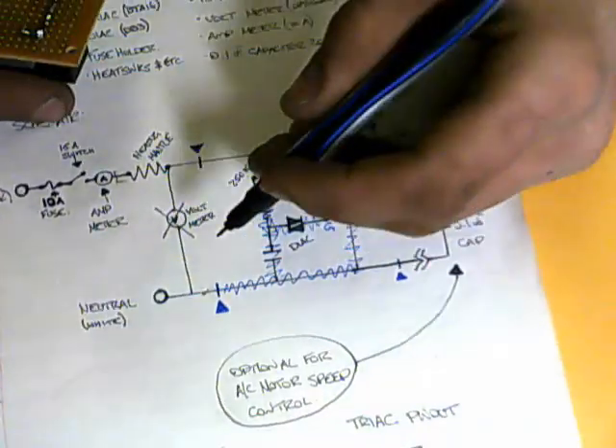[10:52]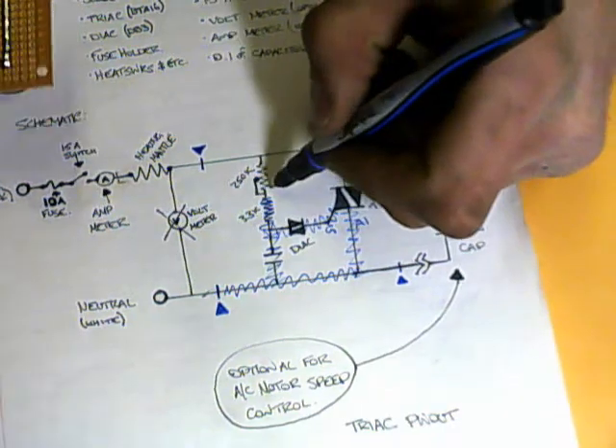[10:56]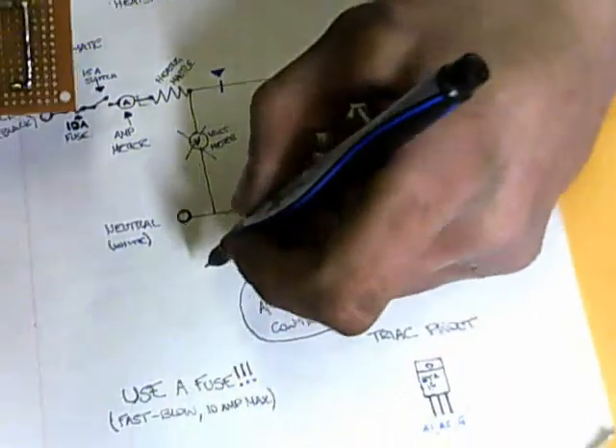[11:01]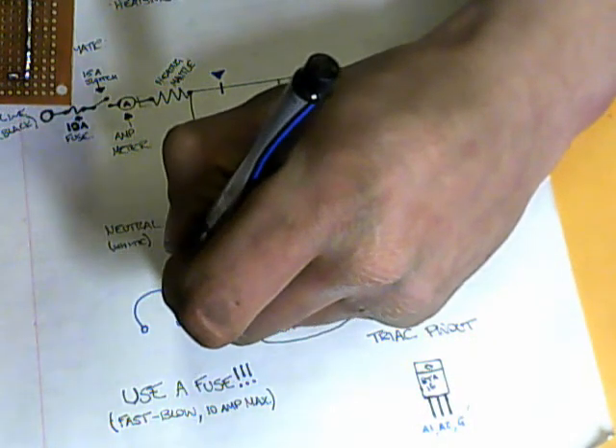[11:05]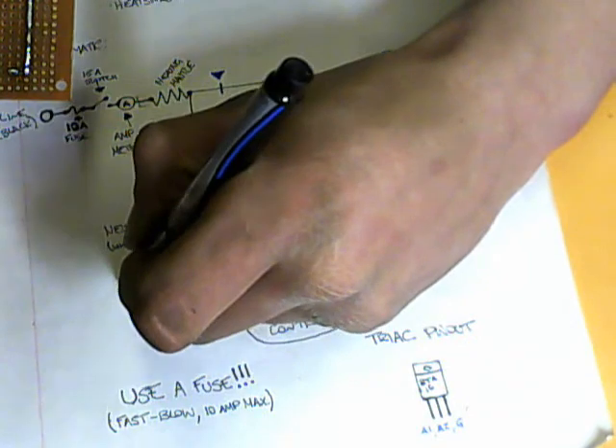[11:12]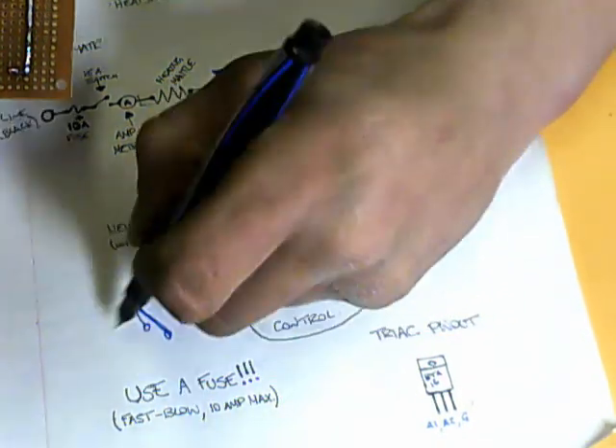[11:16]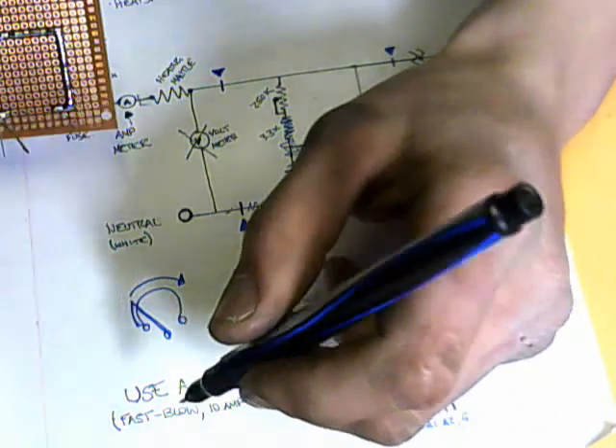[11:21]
Notice on the side here of the potentiometer, there's the little arm that comes out. That's because of the way a resistor works: you've got two points and a wire that goes all the way around, and you have a third point with an arm that touches somewhere along this wire. The farther you move the arm that way, the longer the distance between here and here, and the more resistance you have. So basically, it is a variable resistor.
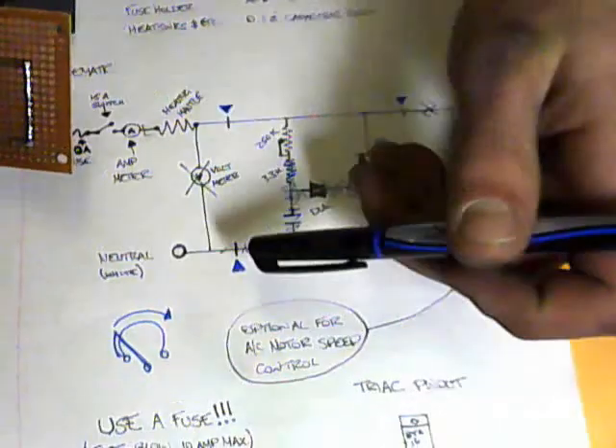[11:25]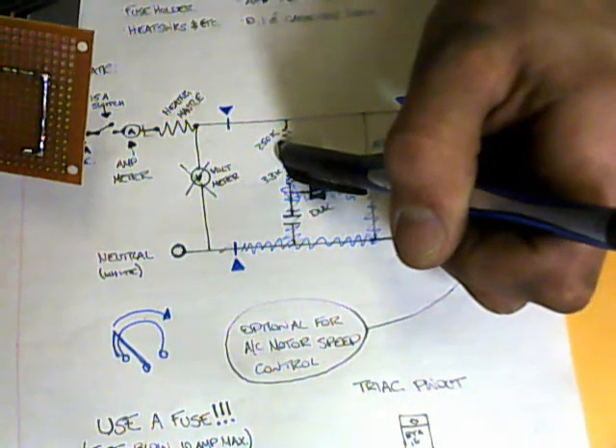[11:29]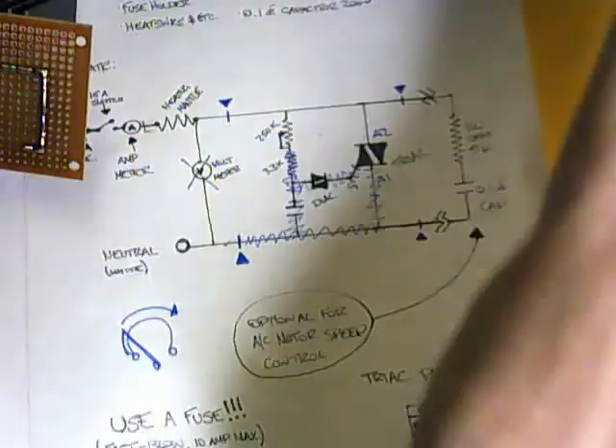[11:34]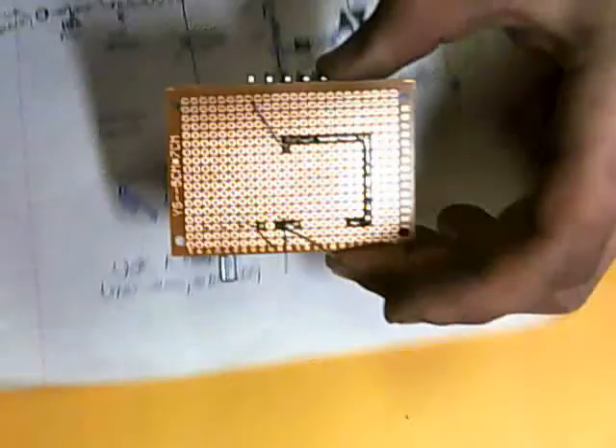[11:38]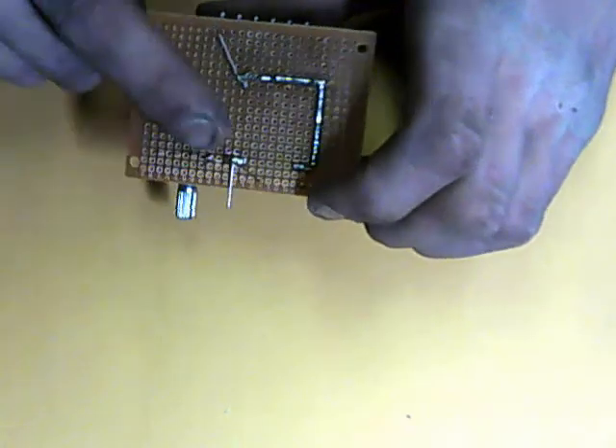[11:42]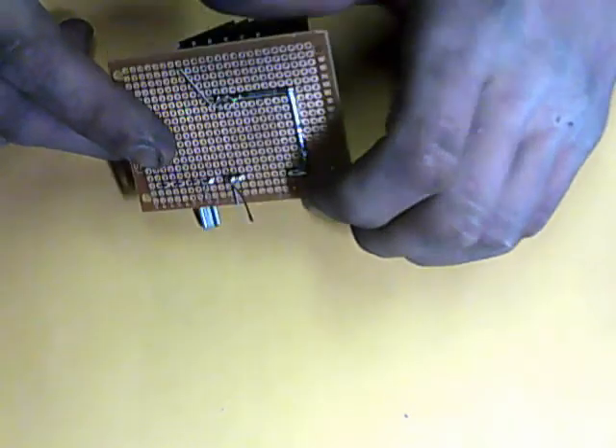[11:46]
So in the picture here, you can see one end of the potentiometer is directly connected to the center pin of the potentiometer. So what we're going to do is just solder the other side of the resistor directly to the first two pins of the potentiometer.
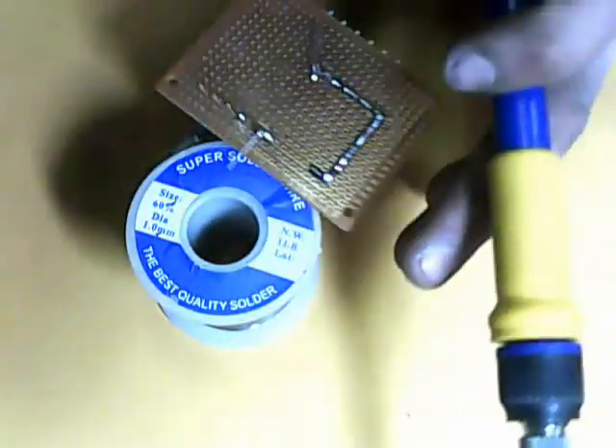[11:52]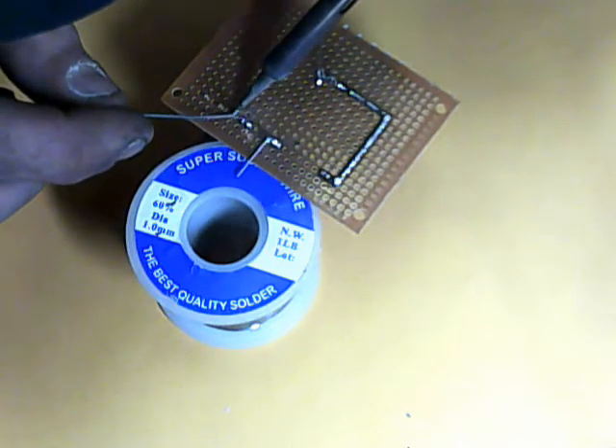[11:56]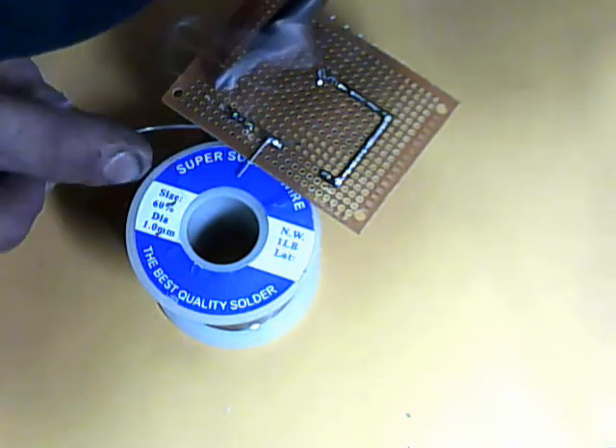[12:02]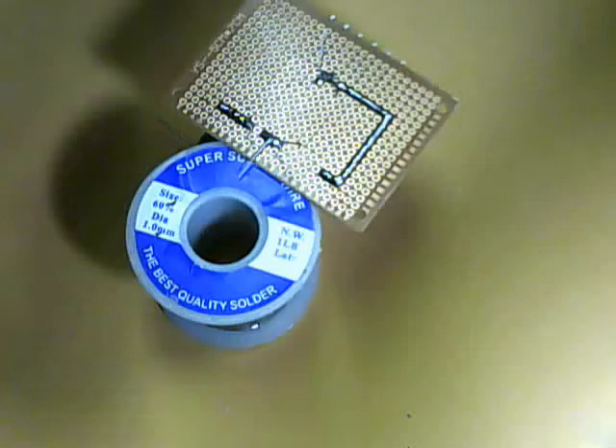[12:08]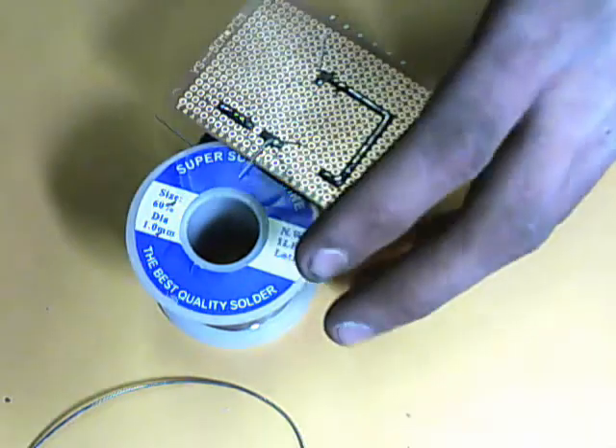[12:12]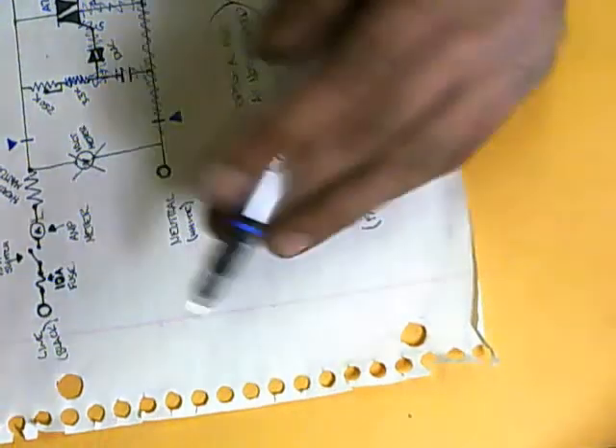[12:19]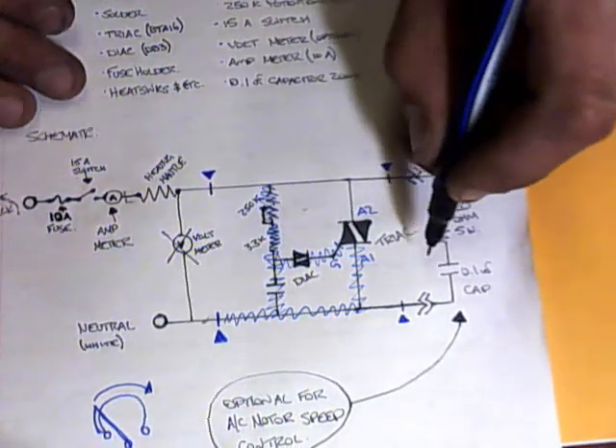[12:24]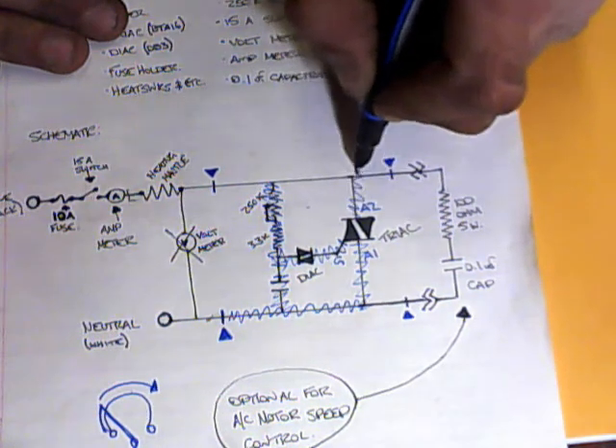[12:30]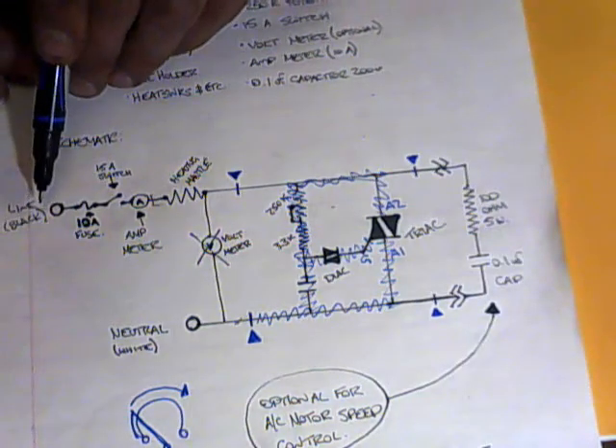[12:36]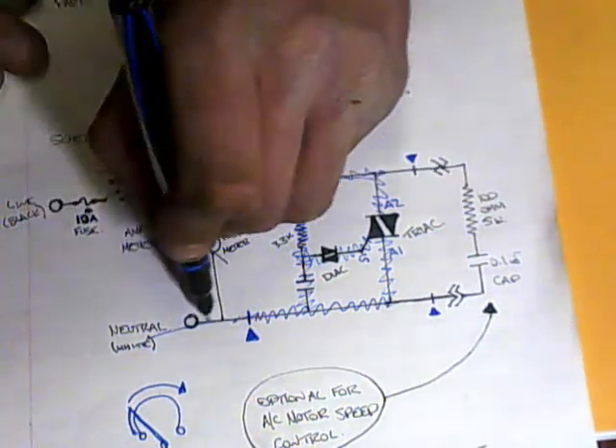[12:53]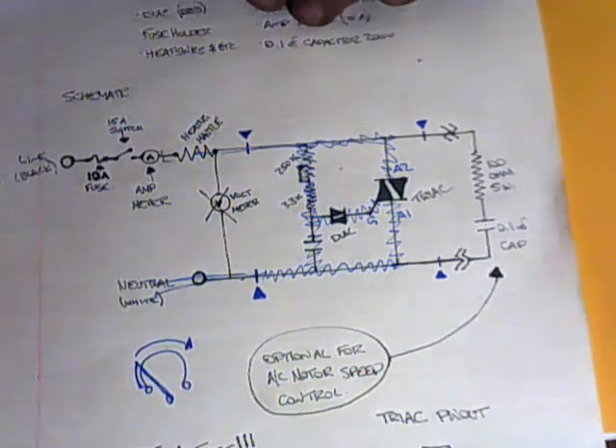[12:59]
And the last thing you're going to want to do, and get the potentiometer out of here now, the last thing you're going to want to do is connect pin A2, which is pin 2 of the triac, up to line, and that'll be your line leg. Then to wire this thing in, all you have to do is take your black wire from the mains of your house, run it through a fuse, run it through a switch, run it through an amp meter, then run it through your heating mantle and into the line side of this circuit. And then just connect the neutral side to the white wire. And it's that simple.
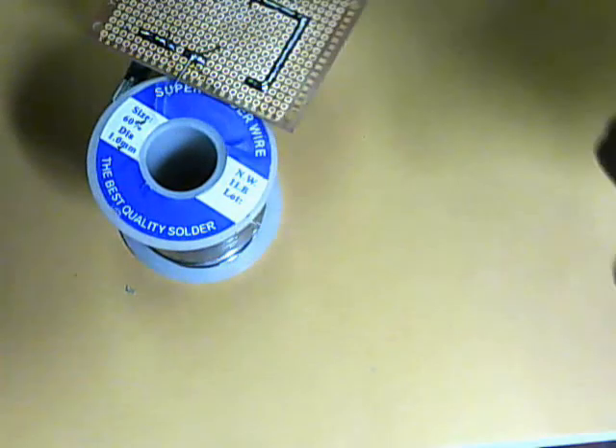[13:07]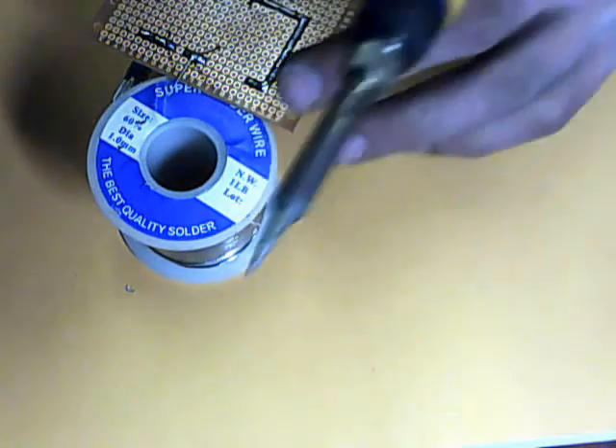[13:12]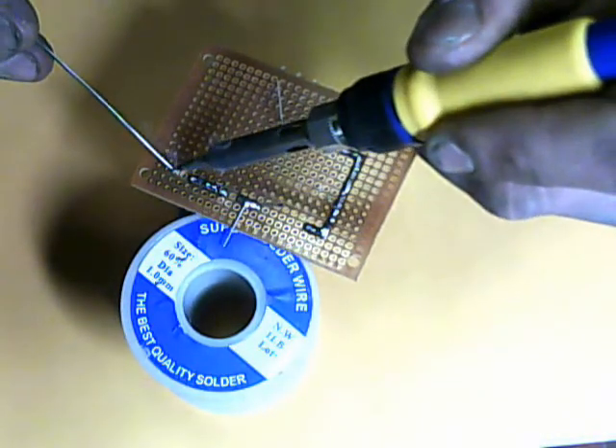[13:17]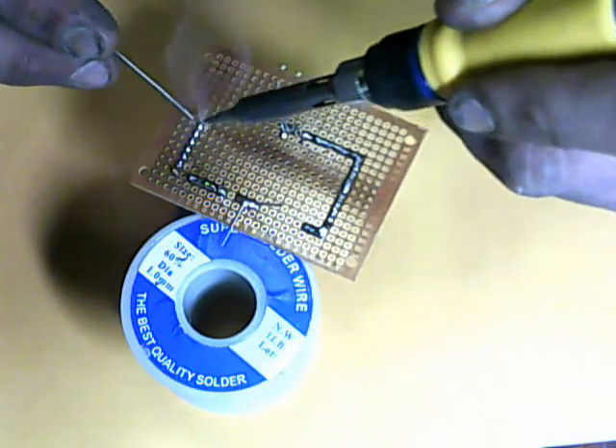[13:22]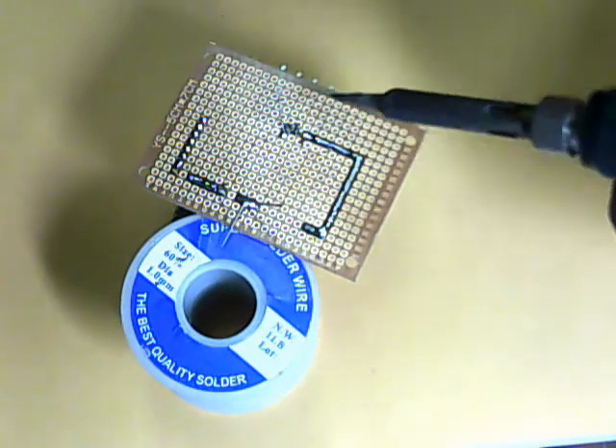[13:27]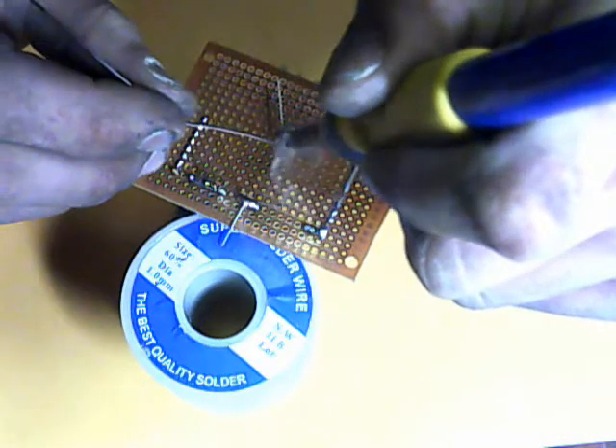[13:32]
So what we're going to do is take the circuit and connect up the line side. So like I said, from the other side of the potentiometer here, we're going to make the line rail. And from pin 2 of the triac, we'll come up from the middle here. Bridge that.
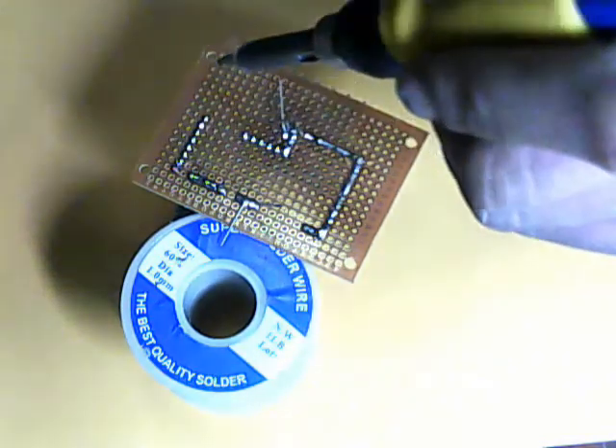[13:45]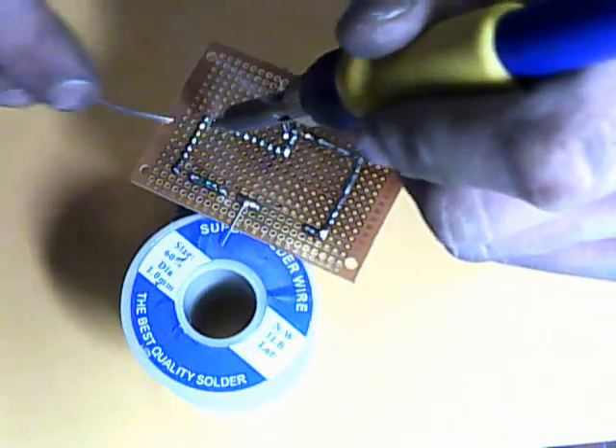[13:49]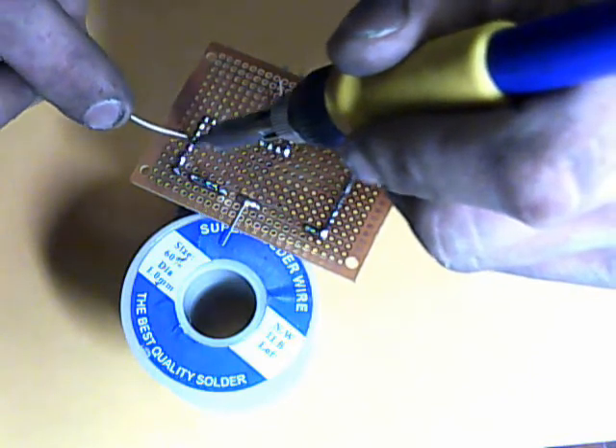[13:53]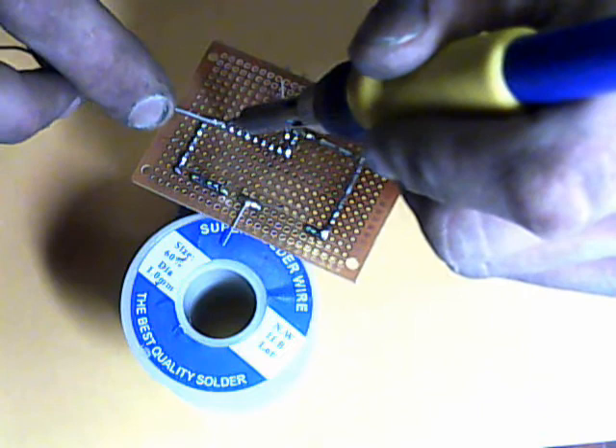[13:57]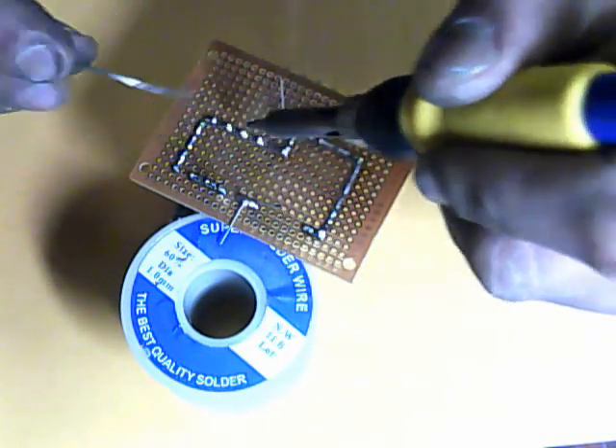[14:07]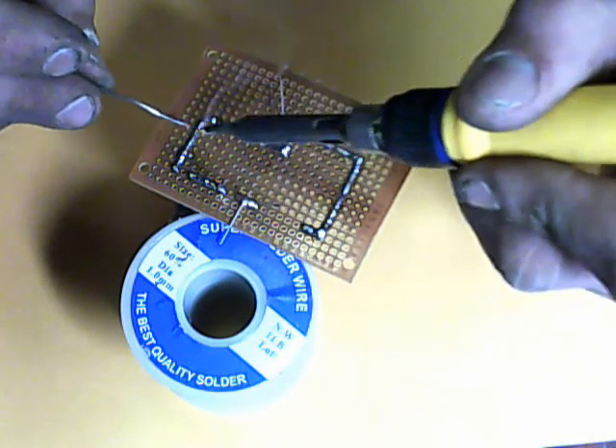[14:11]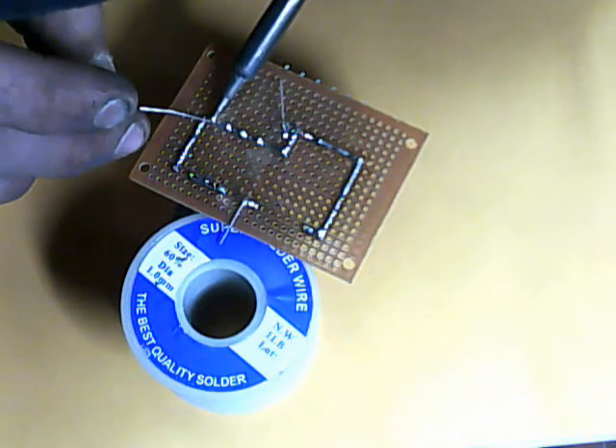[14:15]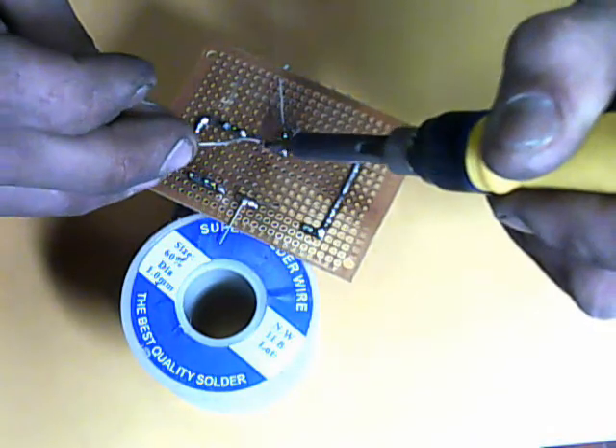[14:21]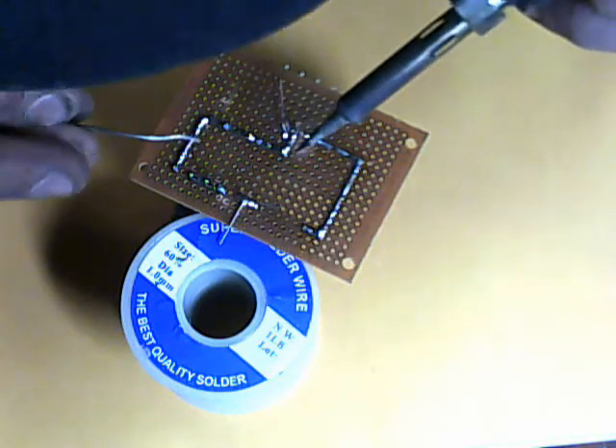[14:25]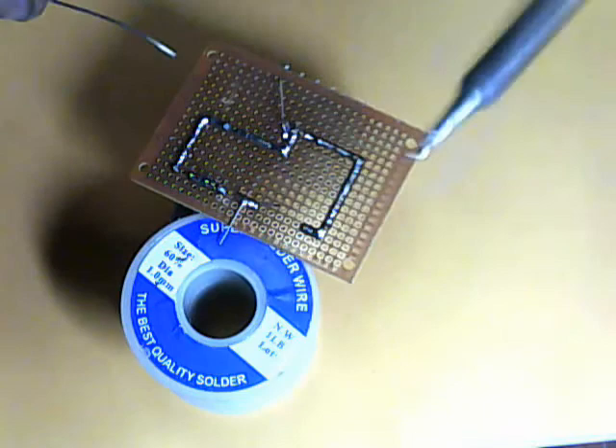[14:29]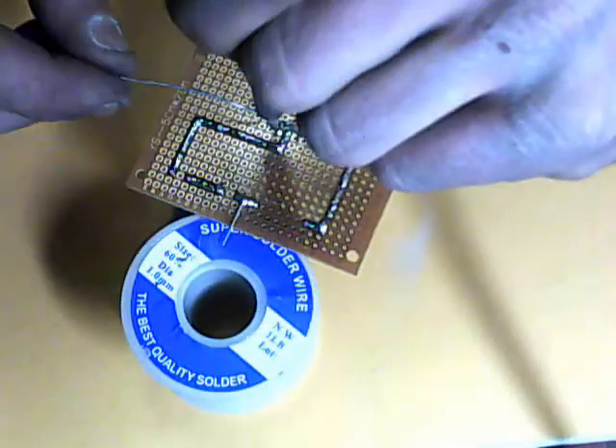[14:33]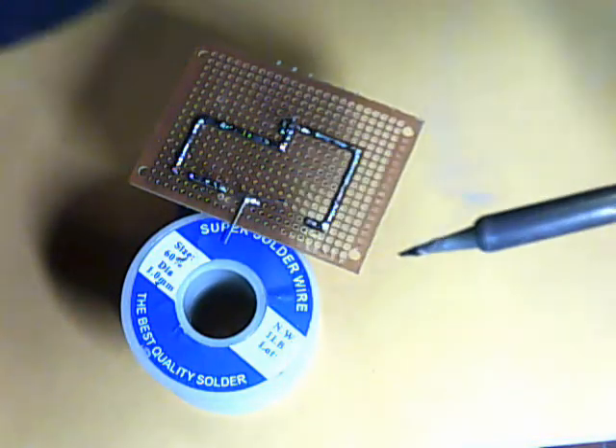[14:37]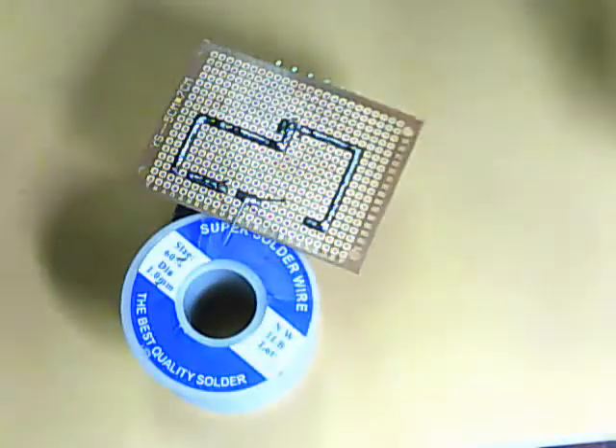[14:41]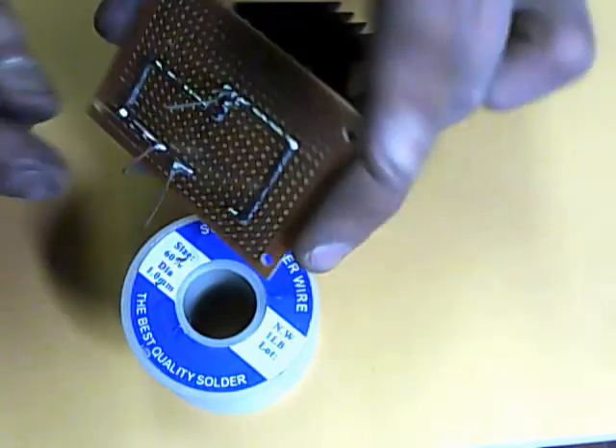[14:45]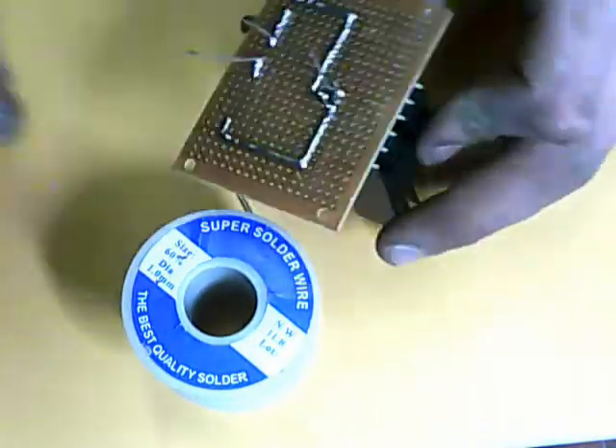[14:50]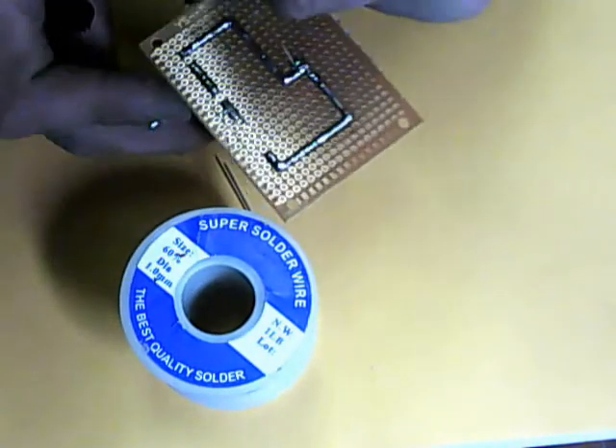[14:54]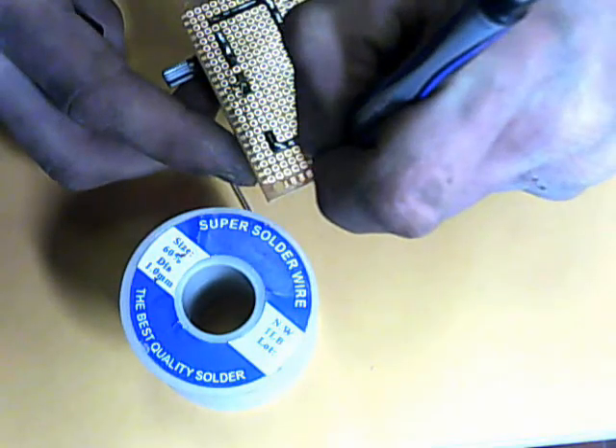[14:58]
Check to make sure that all of the points are connected properly. And then go ahead and cut off all of the extra wires that are left on the end here. And that's it. Don't forget to label it. You have one side that is line, and the other side is neutral.
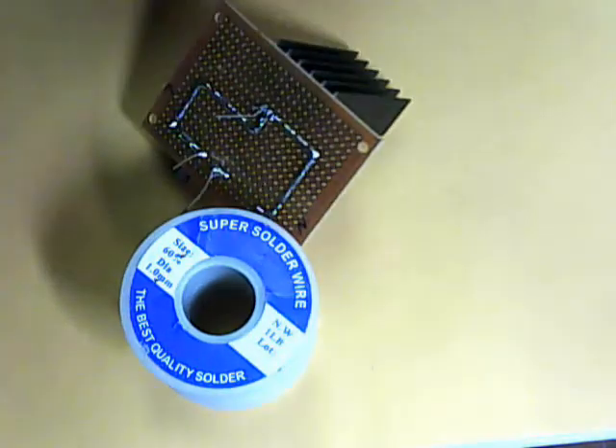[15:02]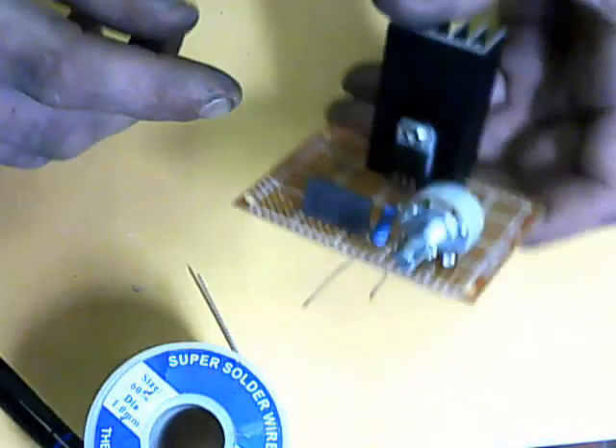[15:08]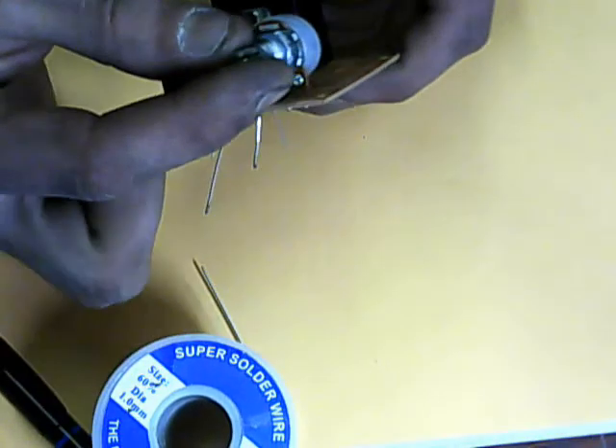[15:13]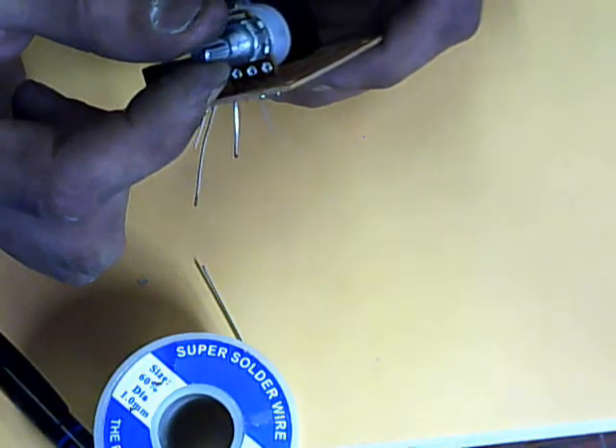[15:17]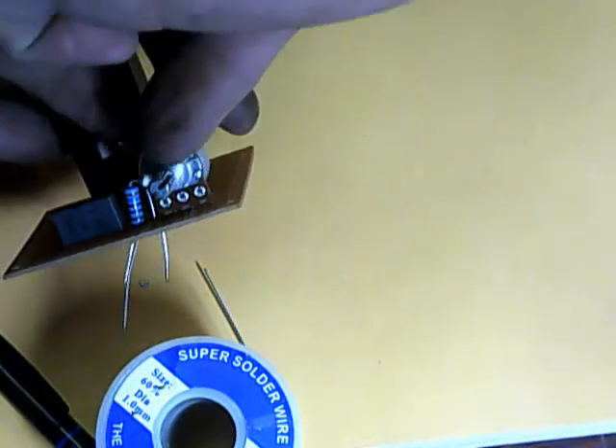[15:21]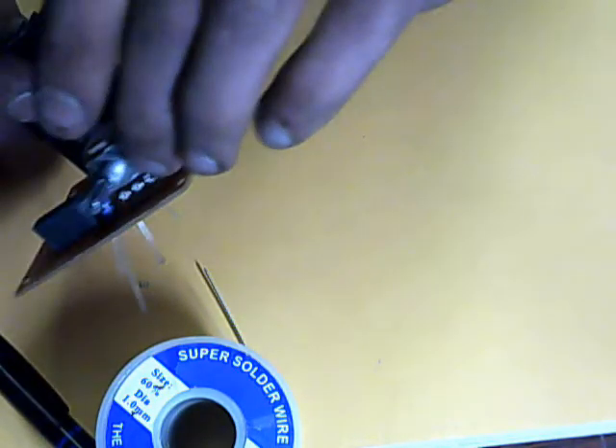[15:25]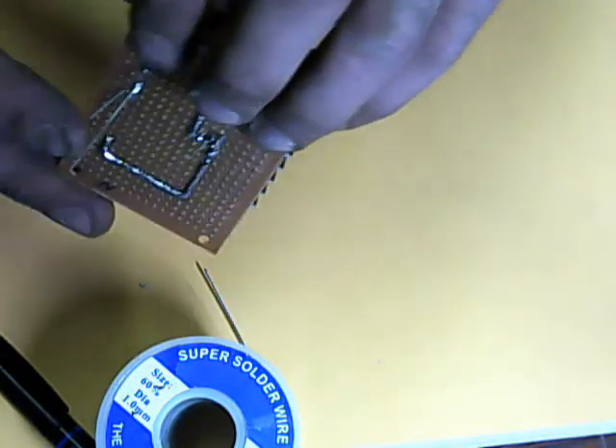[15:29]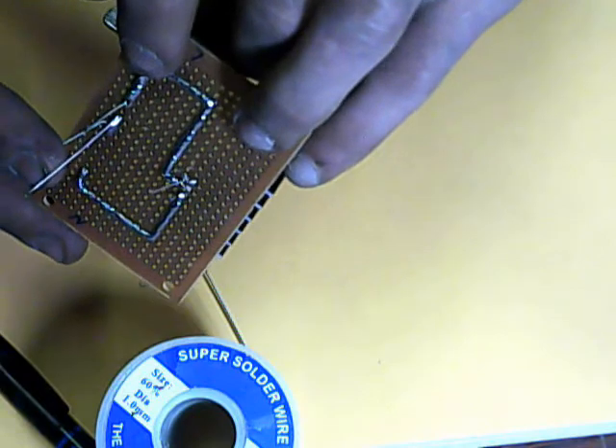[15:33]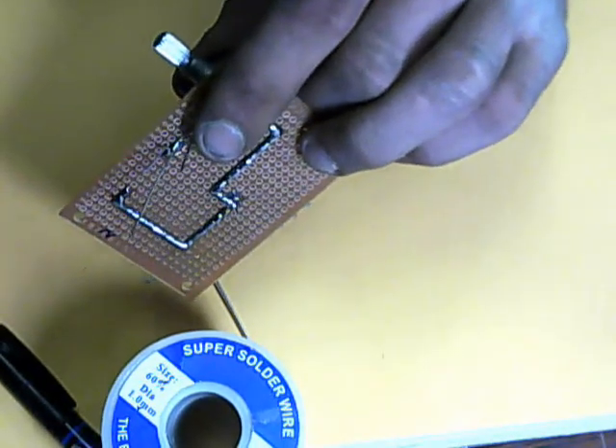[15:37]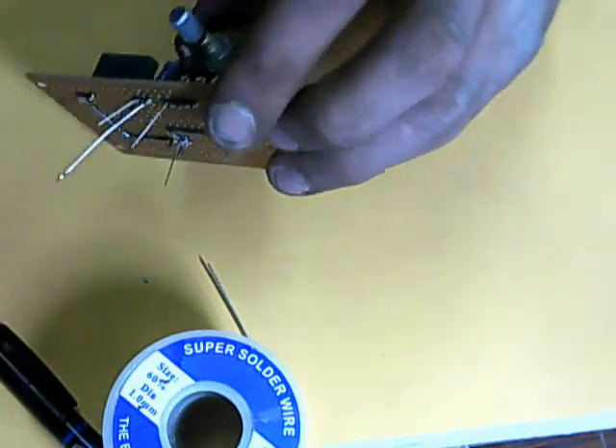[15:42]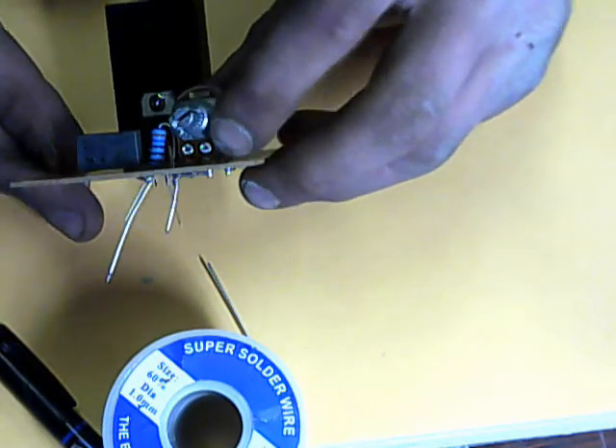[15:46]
Now, if this potentiometer turns down the power when you turn the potentiometer up, basically what that means is you have to flip the potentiometer around the other way. Now, I know that it would be stupid to have the potentiometer facing the other way, so what you can do is reverse the wiring on the back of the circuit board to the potentiometer. Or, in the case like my other one where it's physically wired off of the circuit board, it's not soldered directly to it like we've done here. So I could just flip the wires around and it would do the same thing.
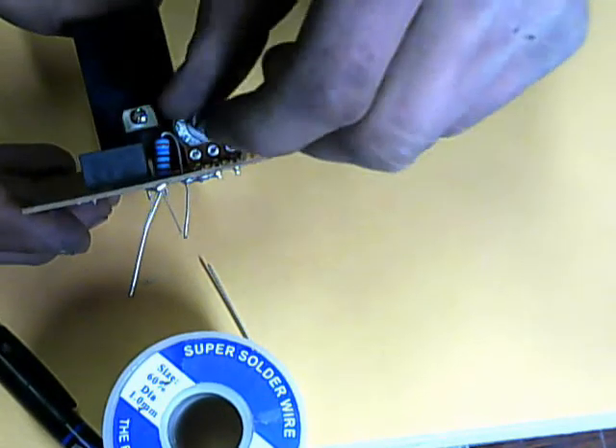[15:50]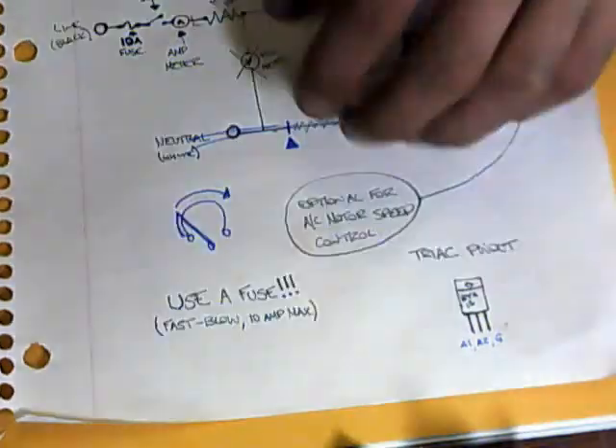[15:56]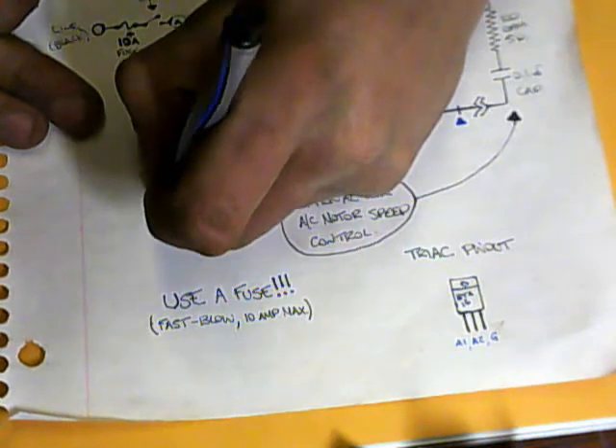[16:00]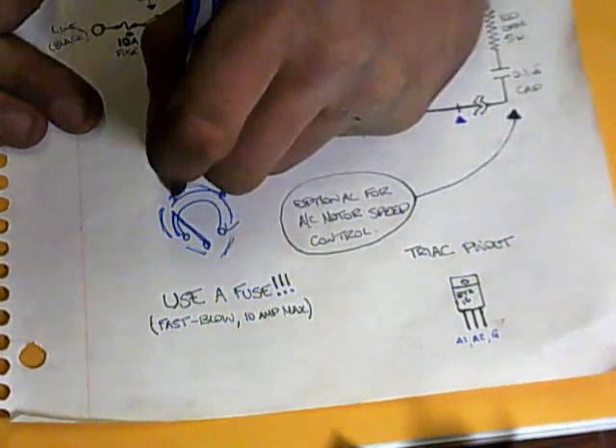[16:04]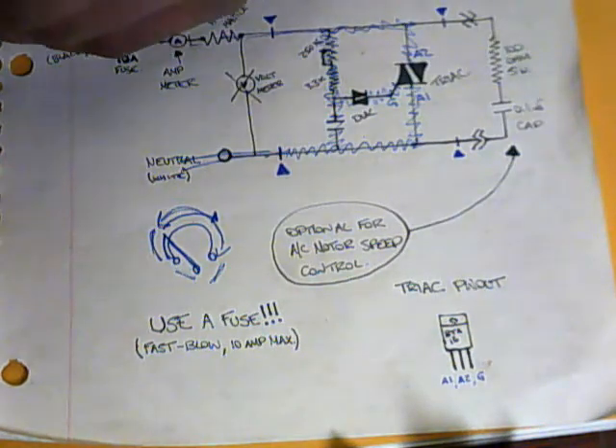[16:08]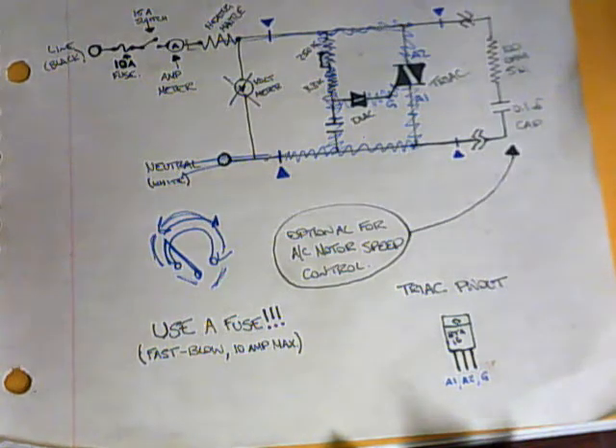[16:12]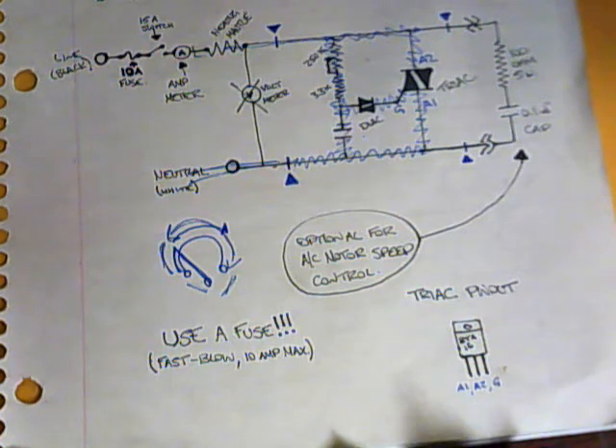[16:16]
Because what it's doing is making the resistance, as I showed you in the picture, instead of it being connected between here and these being the measurement, it would be connected between here and this would be the measurement. So it would be the complete opposite. So if you flip it around the other way, then the potentiometer will turn up the power when you turn it up. Keep this in mind when you first go to test it. You don't want to burn anything out right away off the bat.
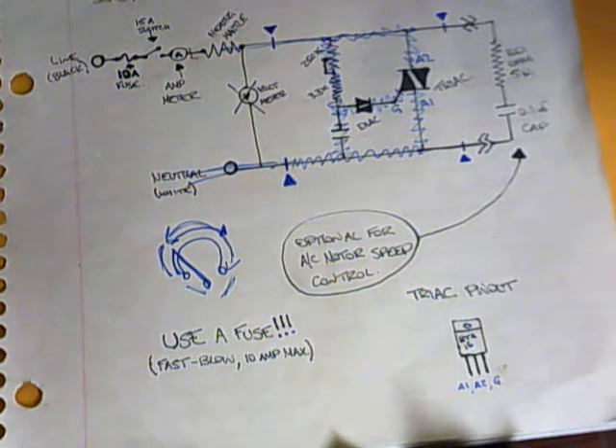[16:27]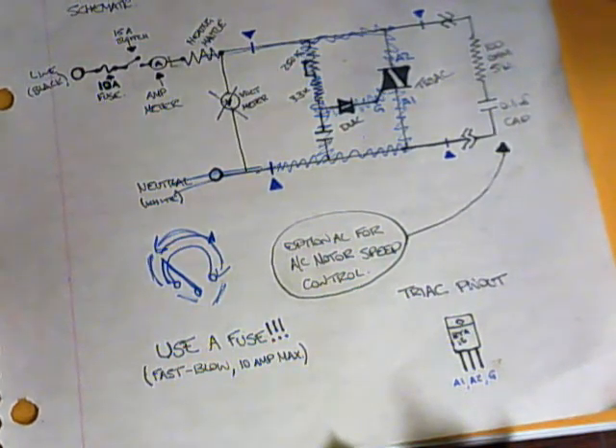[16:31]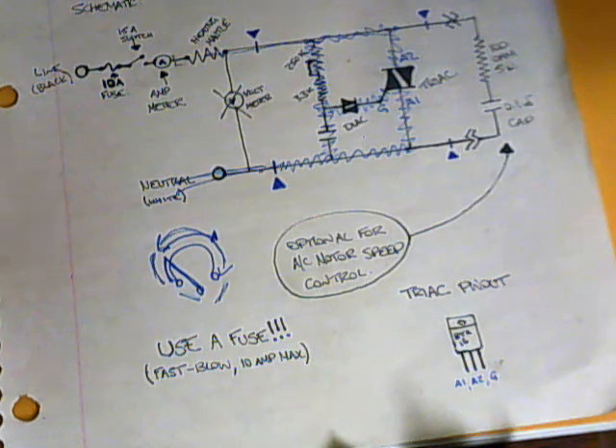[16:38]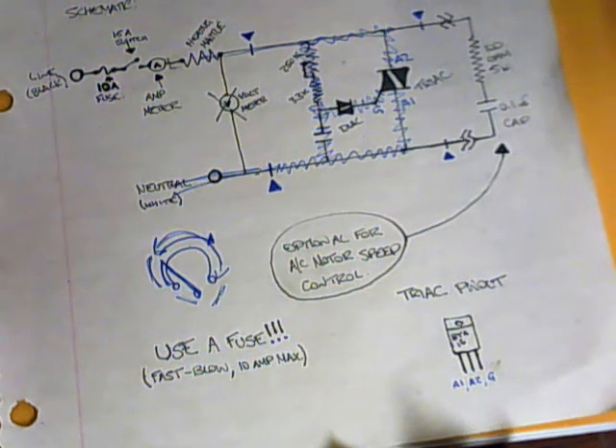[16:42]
So what I would recommend doing is putting the potentiometer in the center position before you turn it on for the first time. Cross your fingers and hope for the best. Watch the amp meter. If it jumps up real high right away, unplug it real quick or turn the switch off real quick. And try to put the potentiometer the other way and turn it back on.
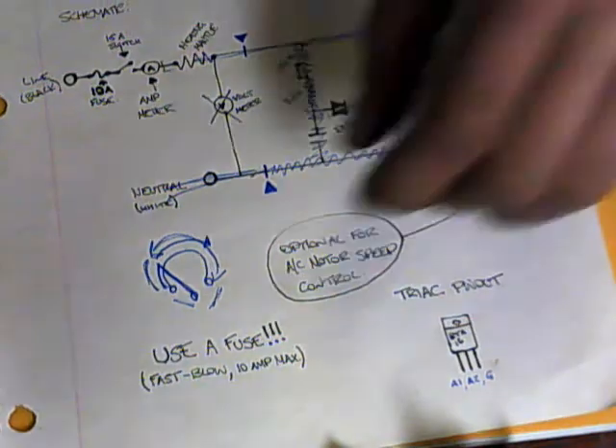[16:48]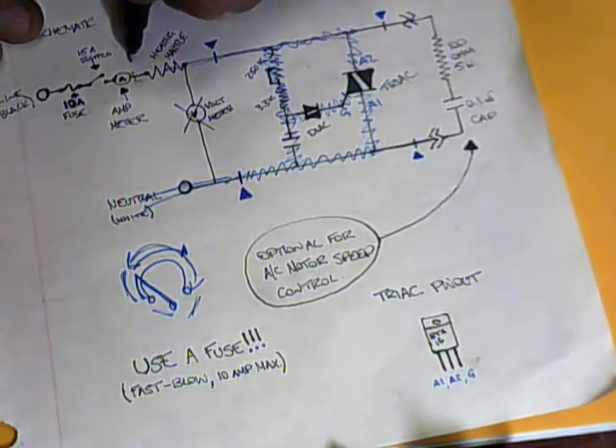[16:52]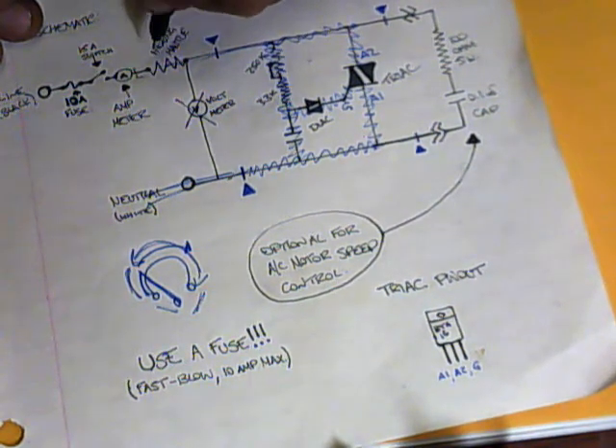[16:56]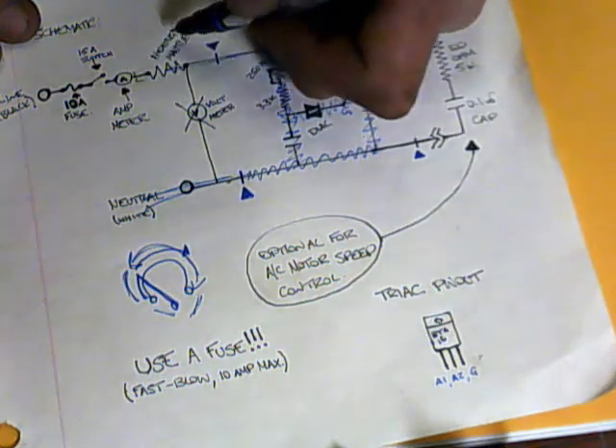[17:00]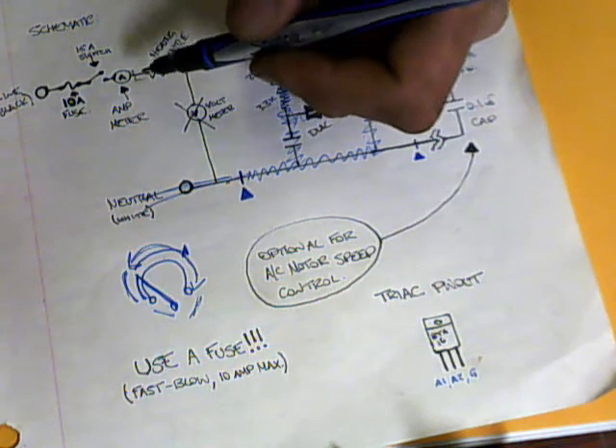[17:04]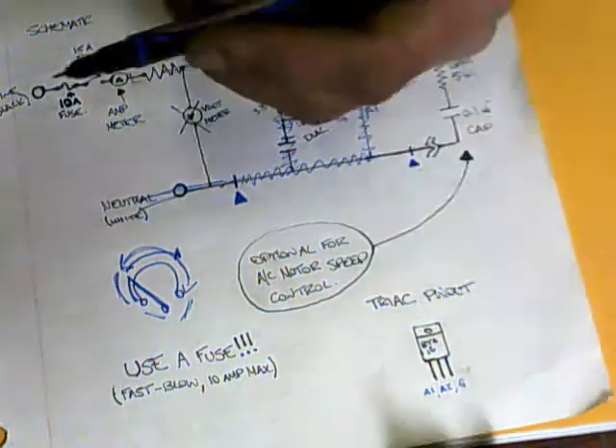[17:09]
Another thing I'll note is if you don't have a load across, like if you don't have a heating mantle hooked up, then it's not going to draw any power, obviously. So you have to have the heating mantle hooked up, otherwise adjusting the potentiometer, like adjusting the voltage, isn't going to make the dial move at all, if you know what I'm saying.